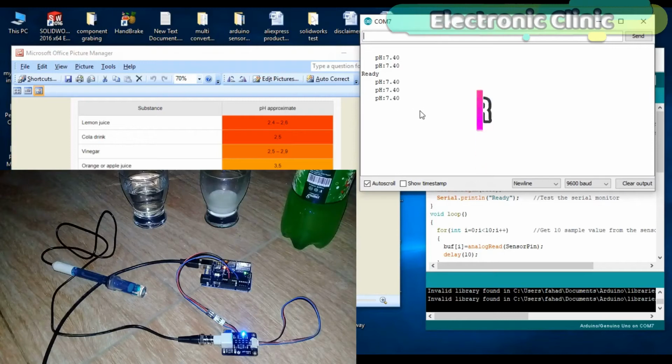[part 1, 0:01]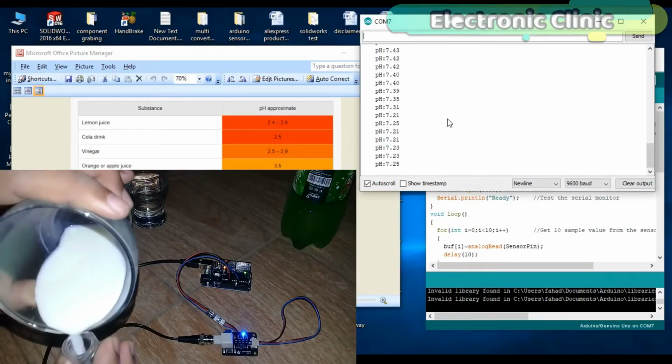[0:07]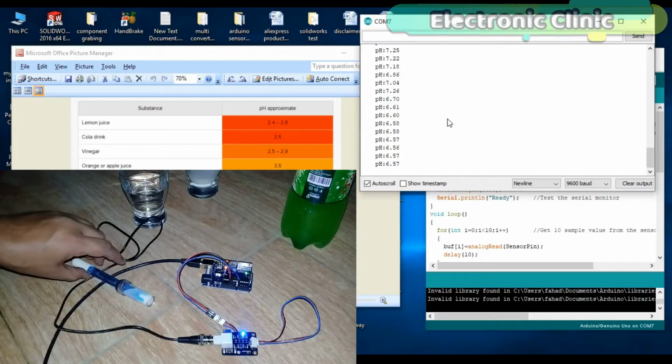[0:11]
In today's episode, you will learn how to use the pH sensor with Arduino and find the pH value of different liquids and display the pH value on the serial monitor.
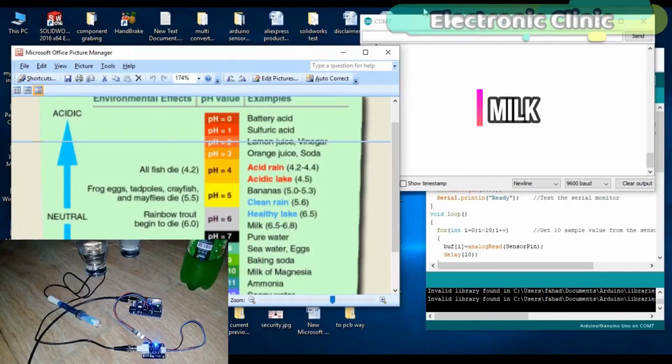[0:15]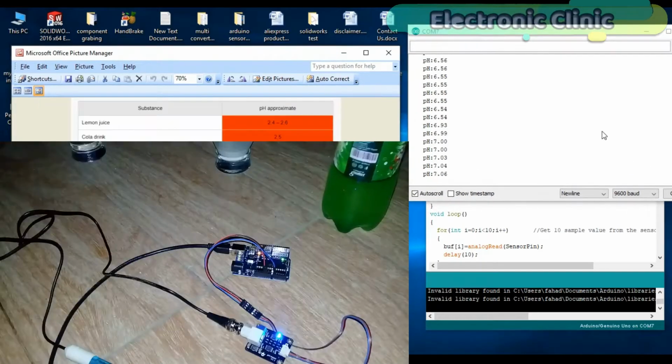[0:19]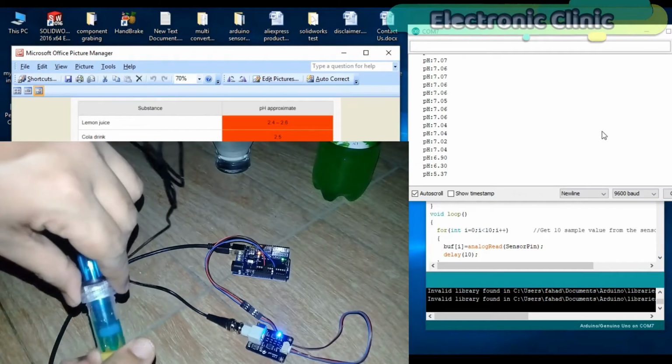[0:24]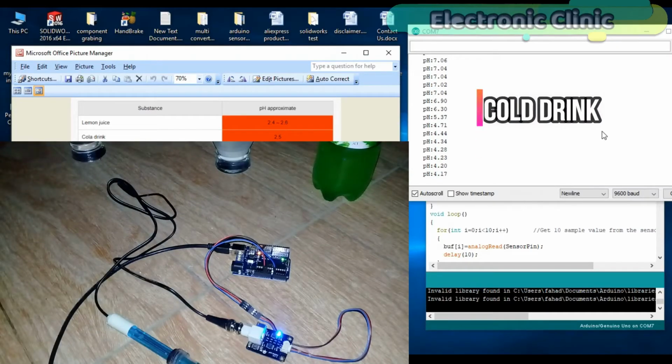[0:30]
As this is a getting started tutorial, we will only cover the extreme basics, for example: number 1, how a pH sensor works. Number 2, application of pH meter. Number 3, pH sensor calibration. Number 4, pH sensor interfacing with Arduino. Number 5, basic programming to find the pH value of different liquids. And finally, number 6, testing. Let's get started.
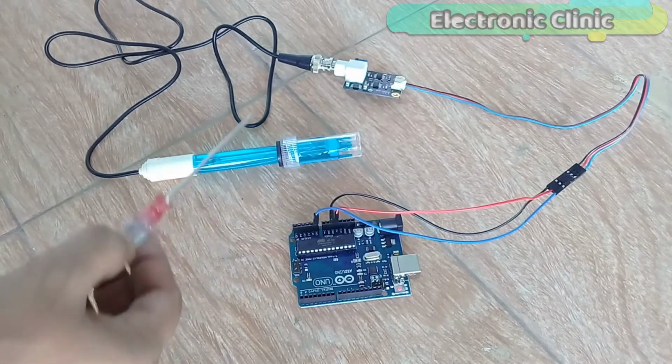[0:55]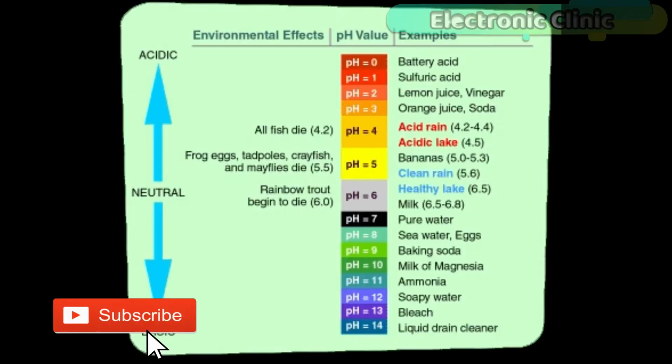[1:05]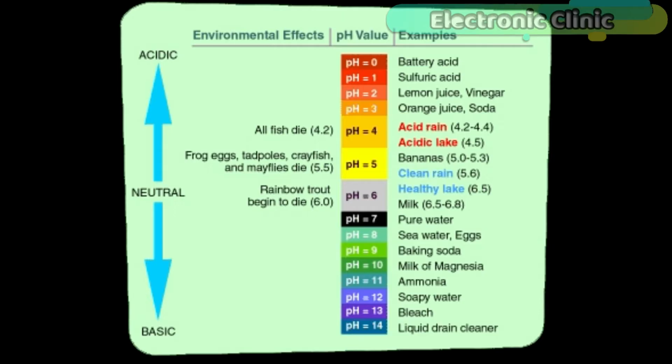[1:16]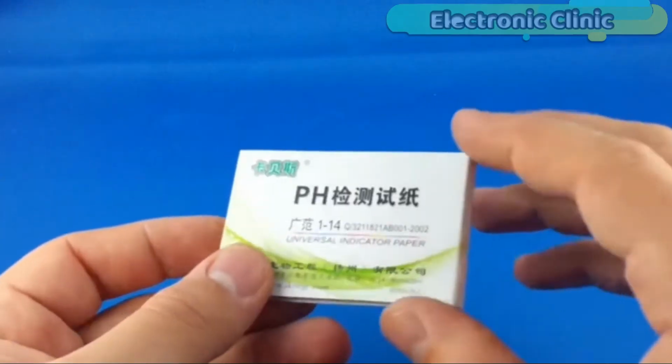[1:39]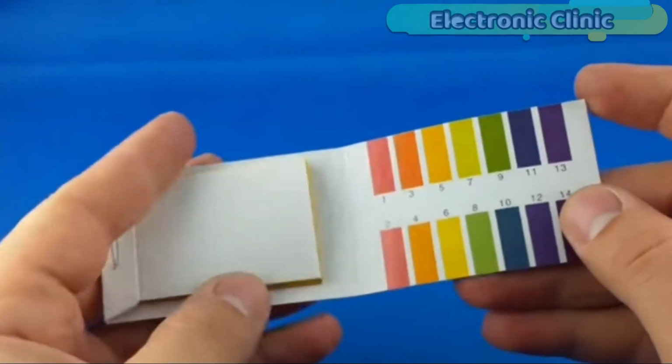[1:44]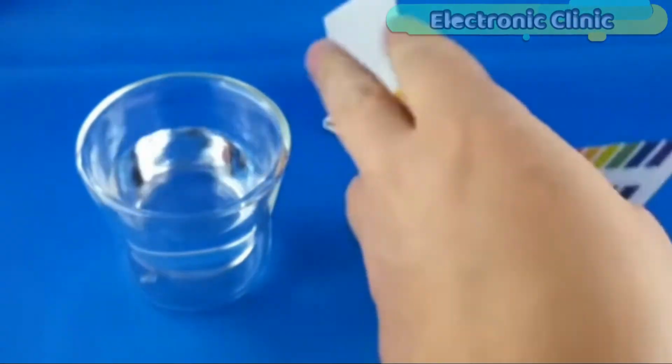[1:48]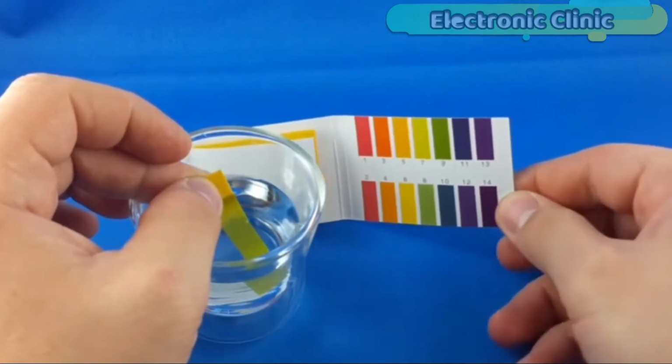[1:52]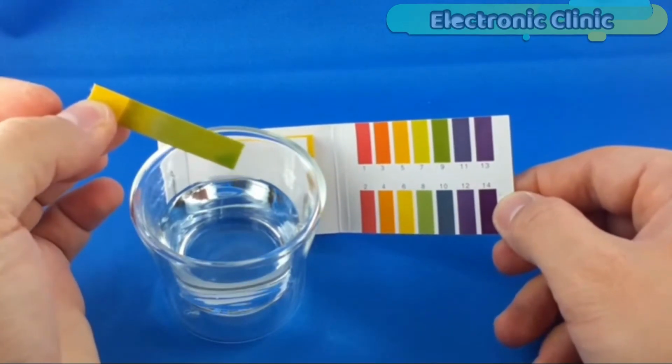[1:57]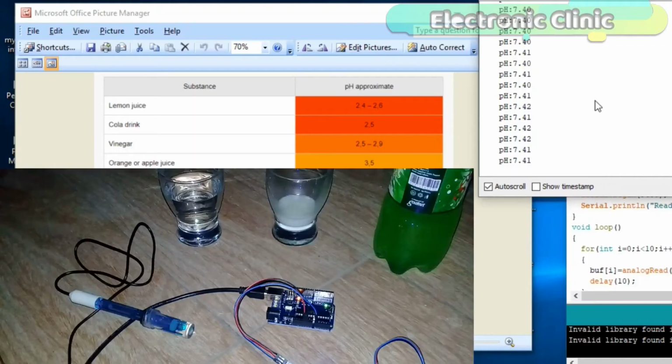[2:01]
If you are using litmus paper, none of this matters. The basic idea is that the paper turns a slightly different color in solutions between pH 1 and 14. And by comparing your paper to a color chart, you can simply read off the acidity or alkalinity without worrying how many hydrogen ions are there. But a pH meter somehow has to measure the concentration of hydrogen ions. How does it do it?
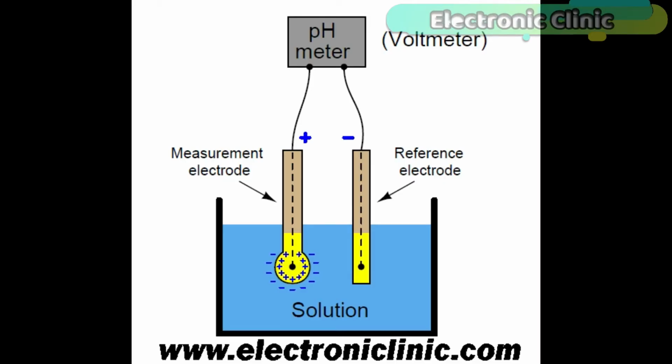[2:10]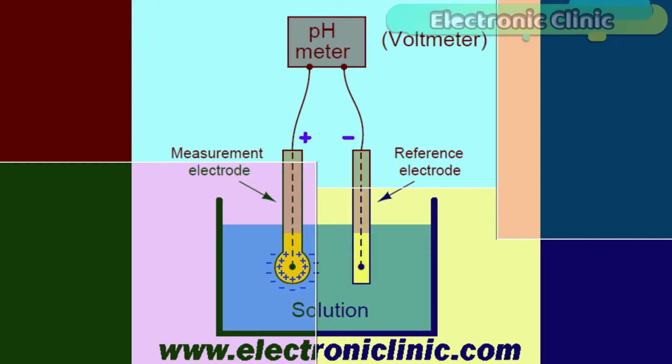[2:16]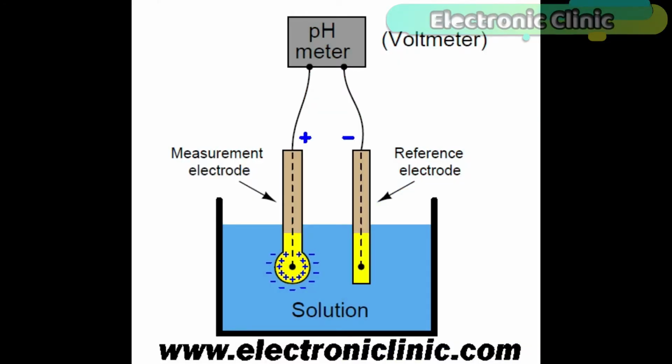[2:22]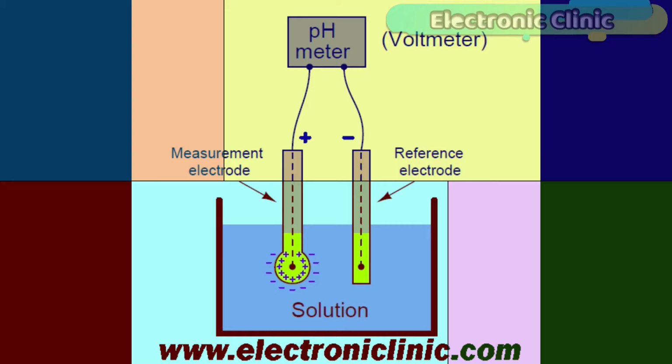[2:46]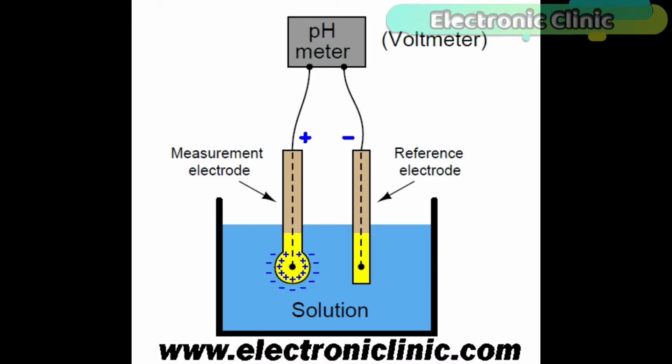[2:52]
An acidic solution has far more positively charged hydrogen ions in it than an alkaline one. So it has greater potential to produce an electric current in a certain situation. In other words, it's a bit like a battery that can produce a greater voltage. A pH meter takes advantage of this and works like a voltmeter. It measures the voltage, the electrical potential, produced by the solution whose acidity we are interested in, compares it with the voltage of a known solution, and uses the difference in voltage, the potential difference between them, to deduce the difference in pH.
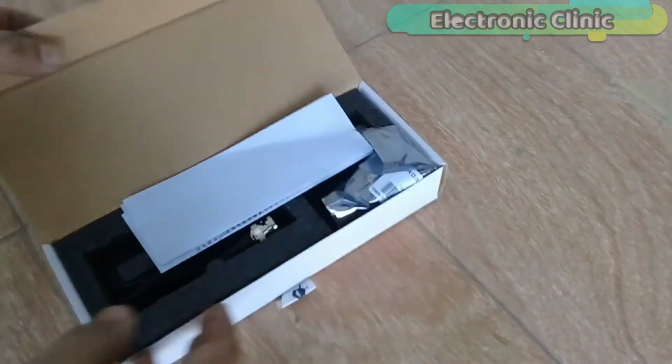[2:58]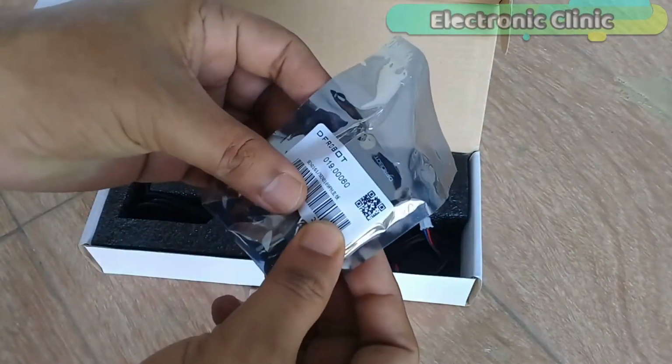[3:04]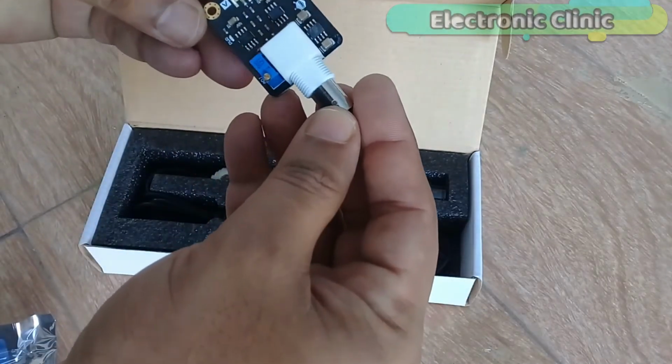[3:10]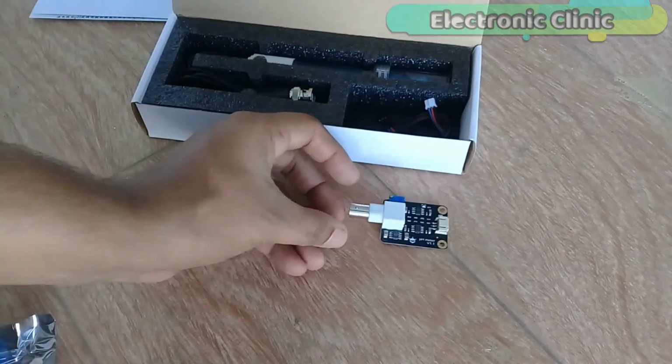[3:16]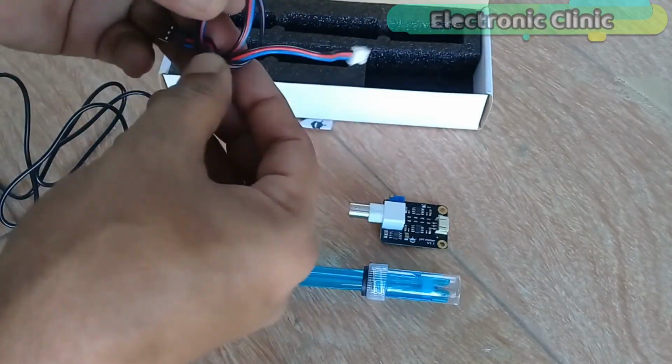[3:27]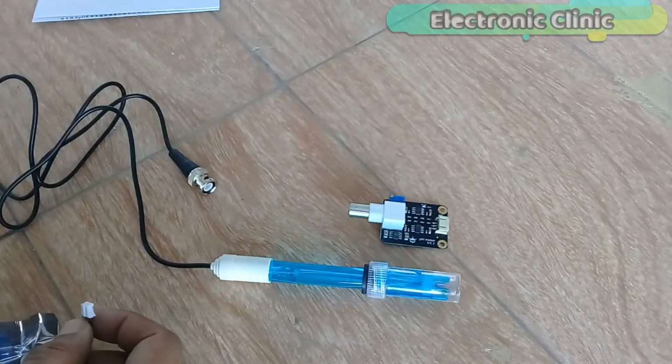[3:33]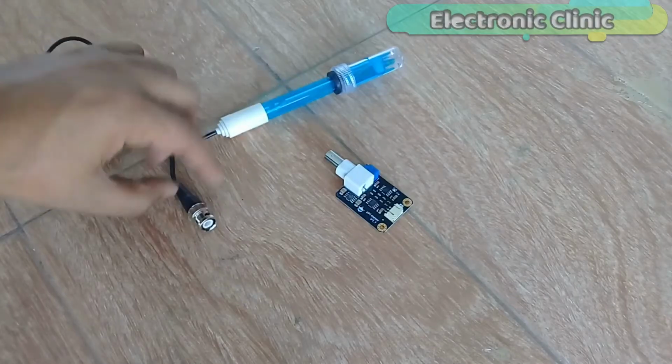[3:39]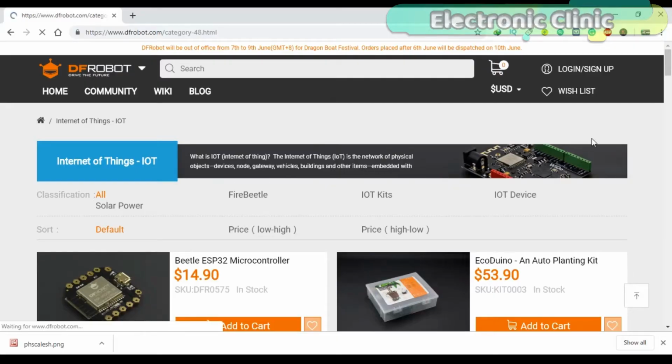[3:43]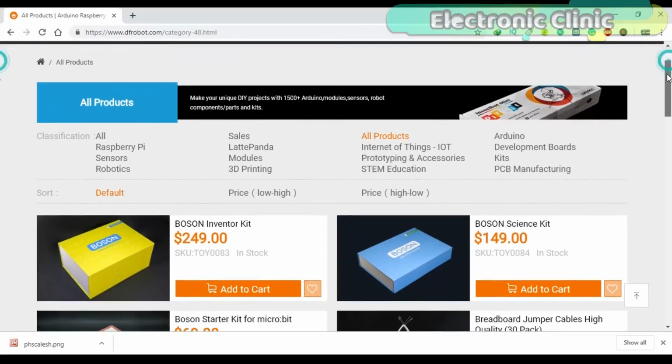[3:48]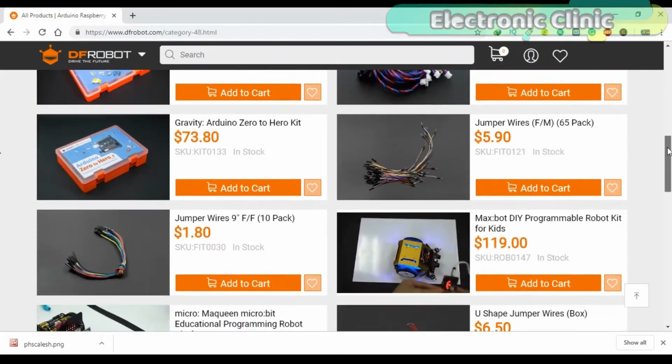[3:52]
This is the analog pH sensor kit from DFRobot. DFRobot is a leading robotics and open source hardware provider. They create innovative, user-friendly hardware and software products that become the building blocks in all kinds of electronic projects.
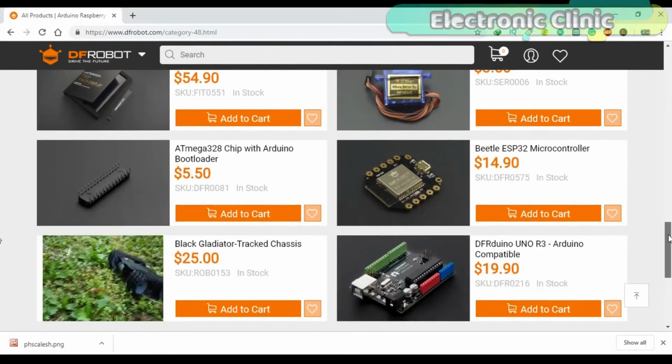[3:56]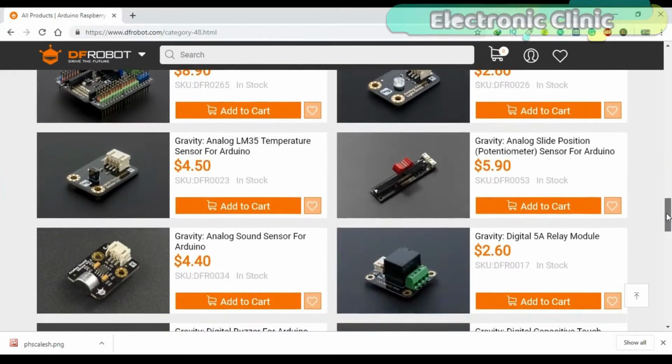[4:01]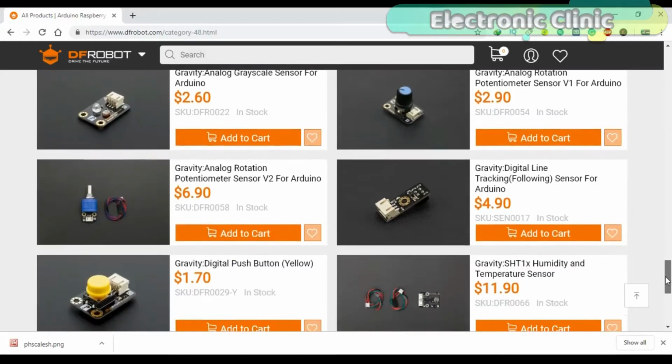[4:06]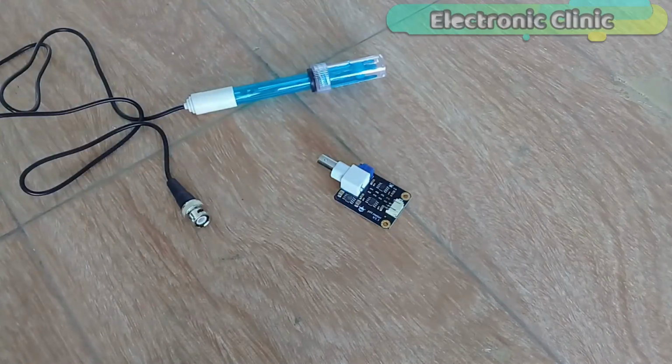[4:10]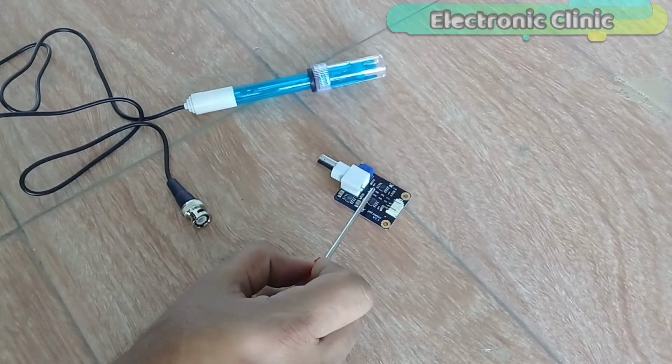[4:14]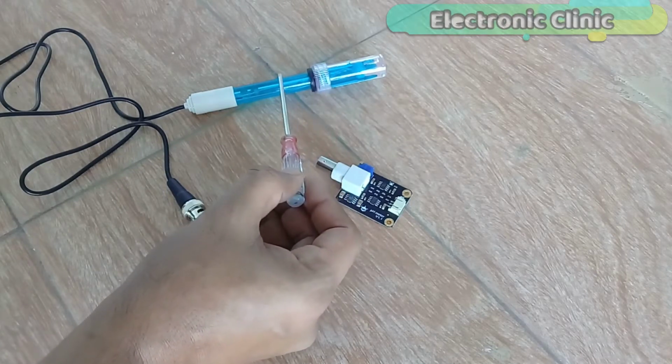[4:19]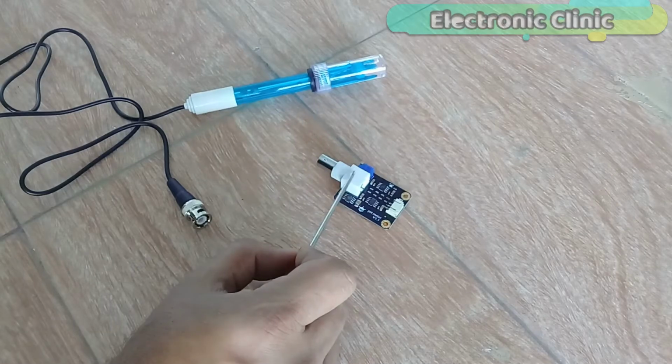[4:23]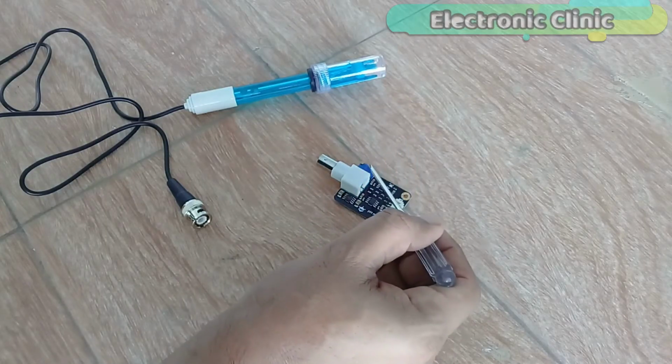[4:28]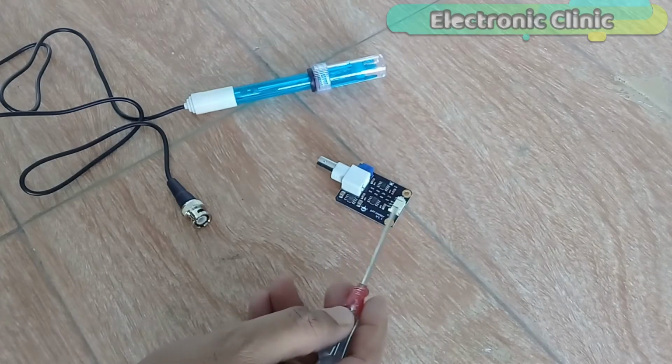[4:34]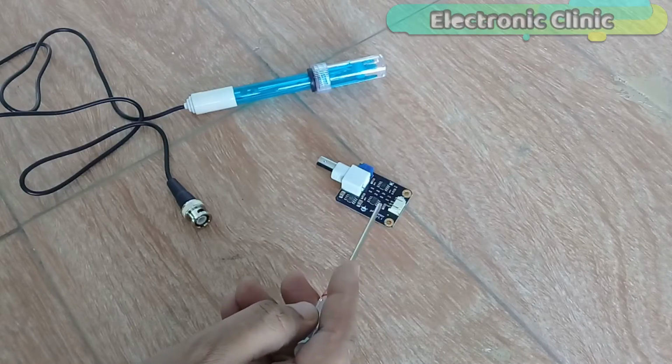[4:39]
This pH sensor kit is best for measuring water quality and other parameters. It has an LED which works as the power indicator, a pH sensor, a BNC connector, a variable resistor which is used for the calibration, which I will explain during the testing, and a pH 2.0 sensor interface circuit. Its interfacing with the Arduino is really simple.
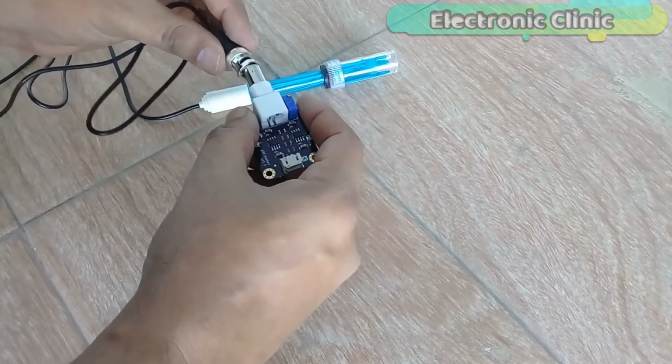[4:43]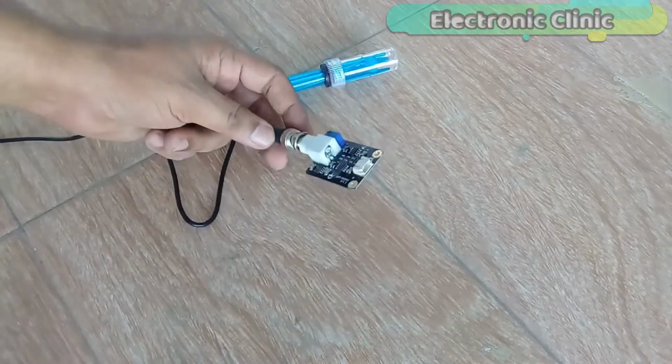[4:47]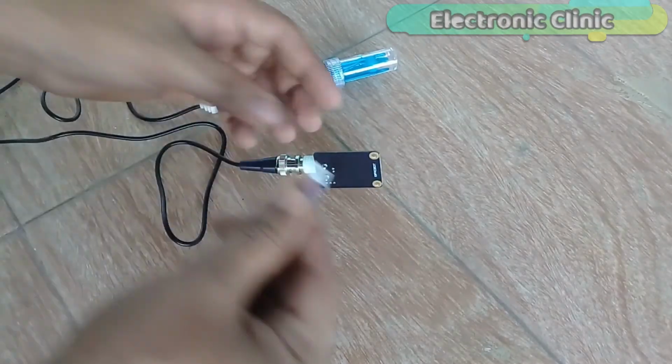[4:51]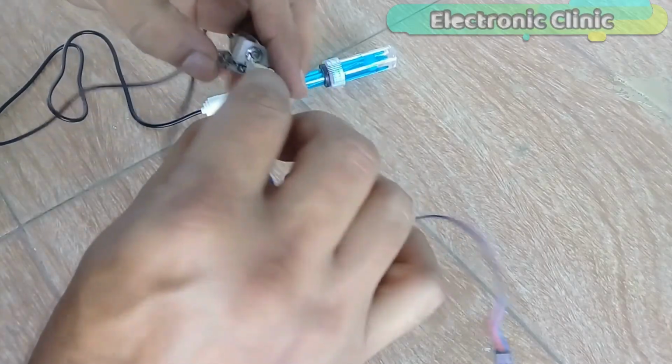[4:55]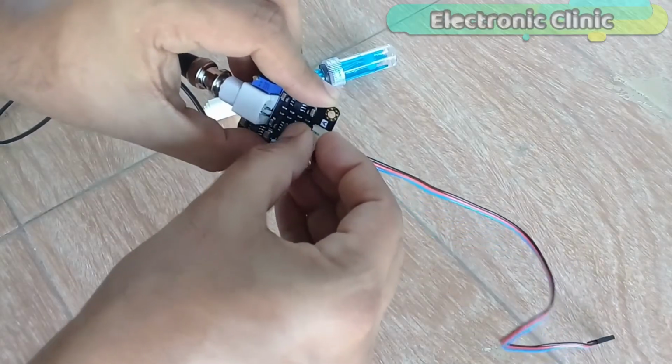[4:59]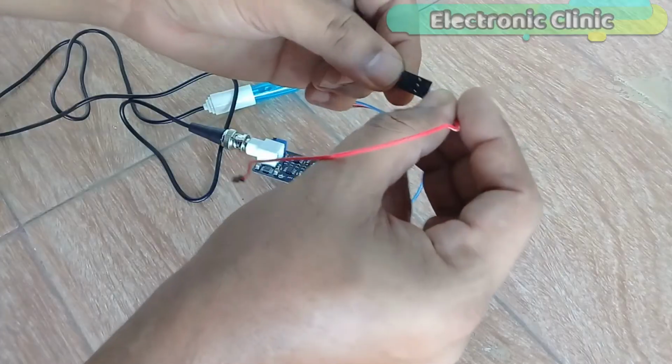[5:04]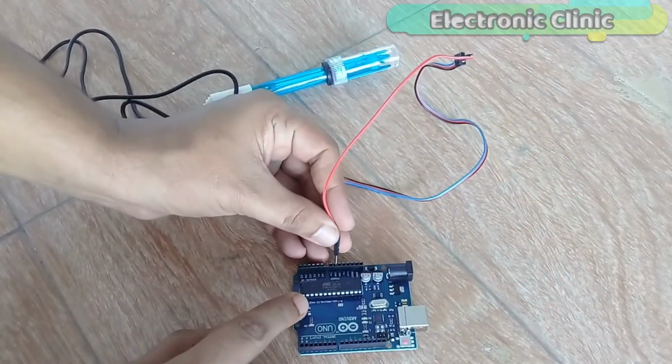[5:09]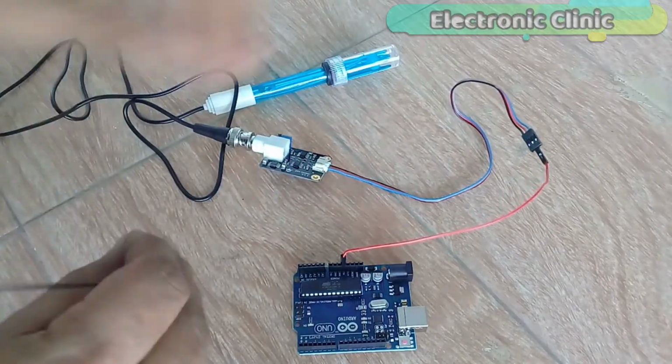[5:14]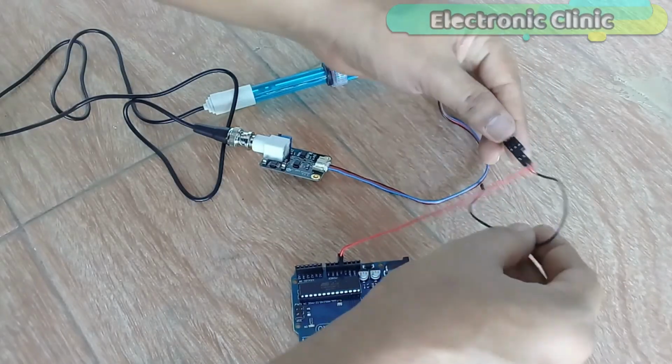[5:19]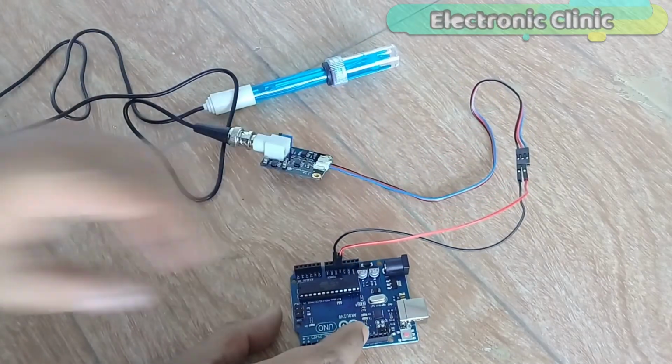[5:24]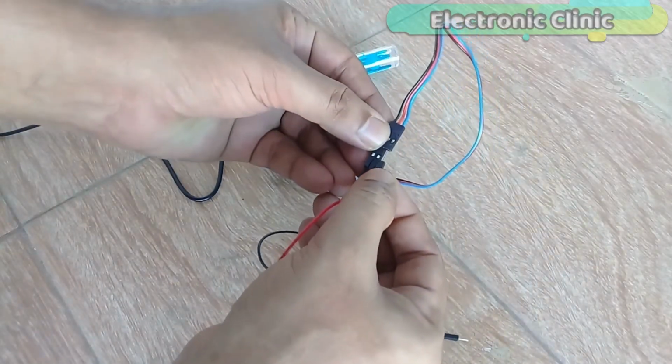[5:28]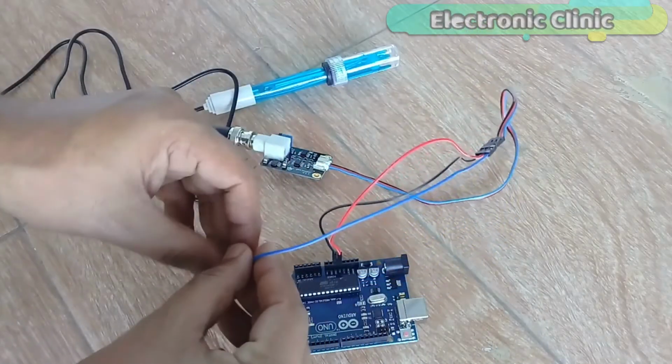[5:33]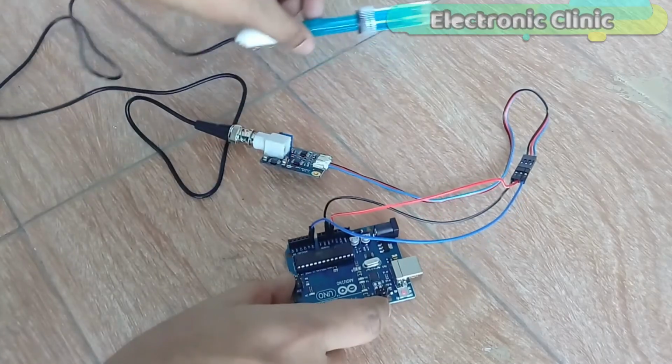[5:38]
Connect the red wire with the Arduino's 5V. Connect the black wire with the Arduino's ground. Connect the blue wire with the Arduino's analog pin A0. So that's all about the interfacing.
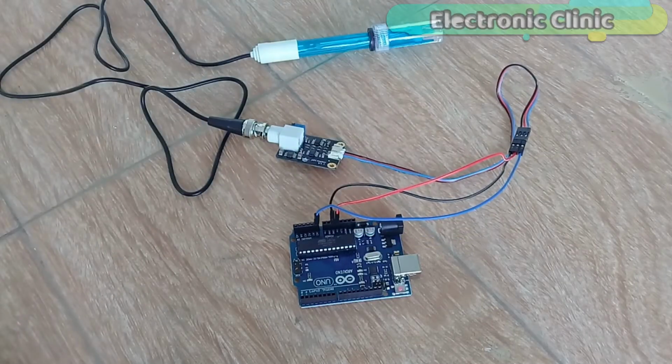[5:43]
Now let's have a look at the Arduino programming. This is a very simple and basic program to find the pH value of different liquids. I will be using some known liquids whose pH values are already known. For demonstration purposes, I will be using water, milk and a cold drink. This program can be downloaded from my website and also from DFRobot.com. I will provide links in the description.
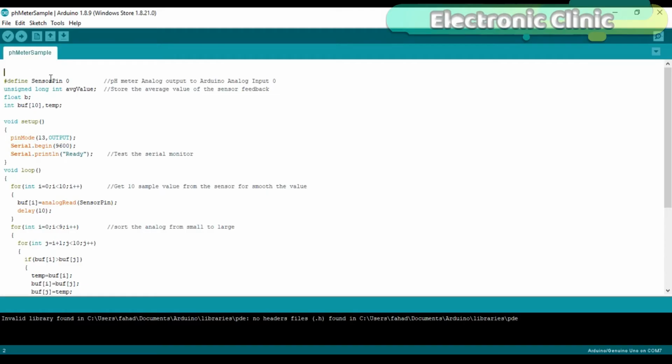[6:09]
This defines sensor pin 0. The pH meter analog output is connected with the Arduino's analog input A0. Unsigned long integer average value stores the average value of the sensor. Serial.begin(9600) activates the serial communication using the Serial.begin function. 9600 is the baud rate. Then starts the void loop function.
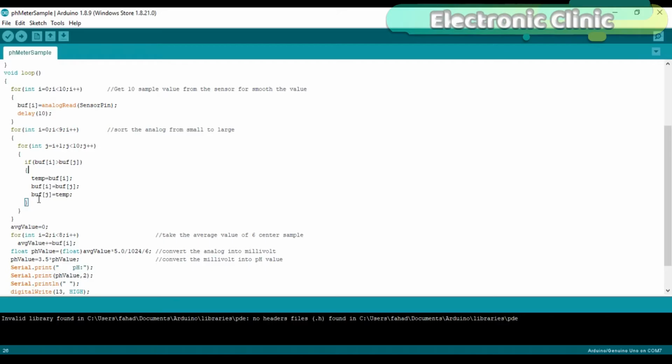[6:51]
We use a for loop to get 10 sample values from the pH sensor and store these values in an array. Then we use these two for loops to sort the values from smaller to larger in ascending order. This for loop is used to take the average value of the 6 center samples and the value is stored in average value. Then we convert this value into millivolts and into the pH value. Then finally, we display the pH value on the serial monitor. I have already uploaded this program. Let's watch this project in action.
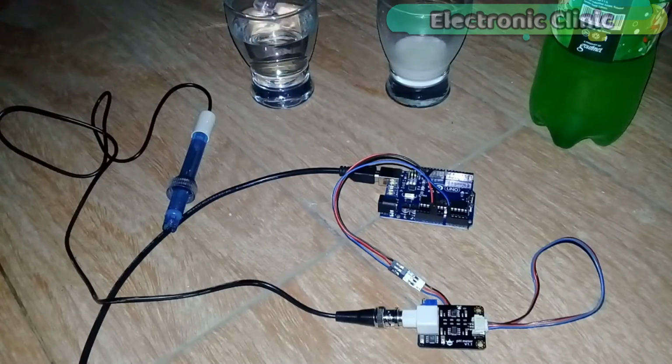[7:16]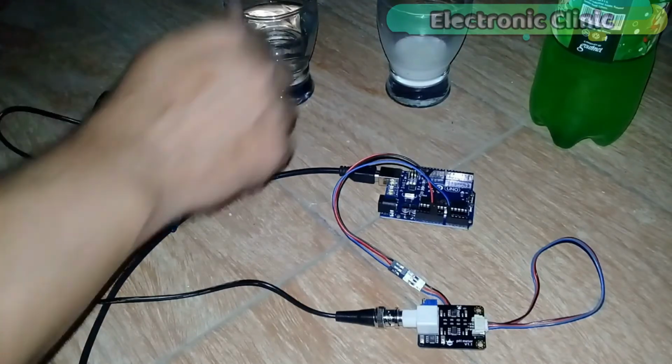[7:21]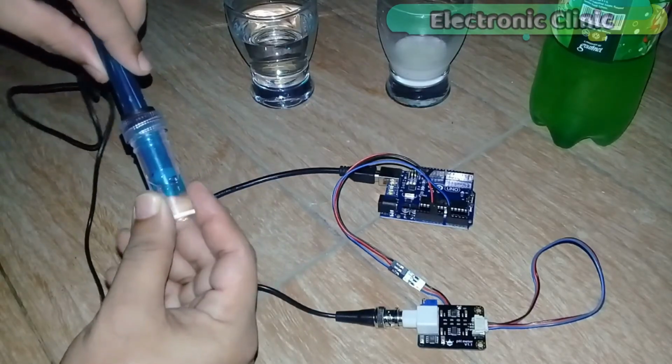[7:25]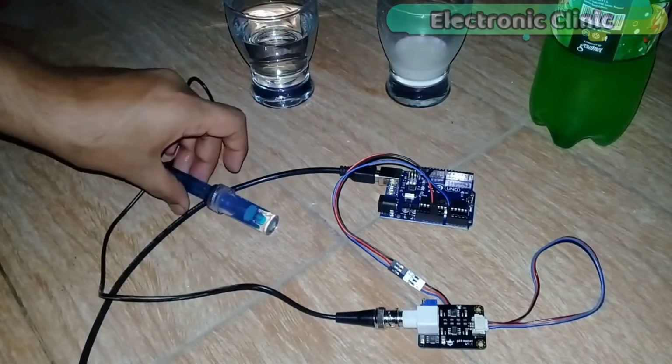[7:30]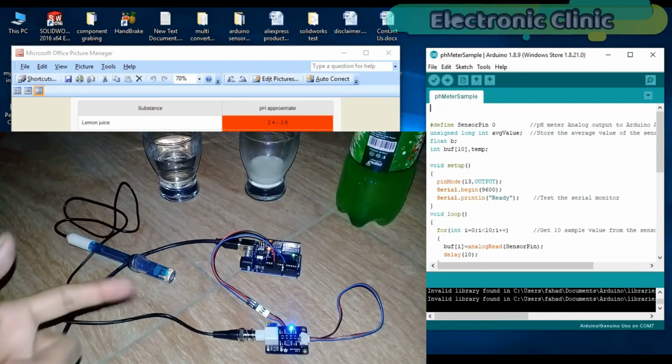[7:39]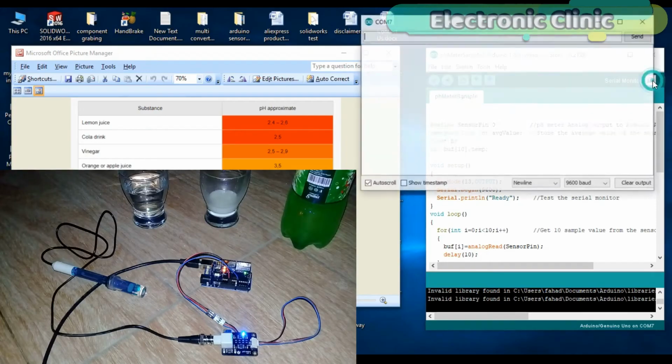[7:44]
First of all, let's find the pH value of the water. The water under test is not pure water, so in this case, the pH value can be slightly greater than 7. Now connect Arduino with the laptop and open the serial monitor. The pH of pure water is 7.
In general, water with a pH lower than 7 is considered acidic, and with a pH greater than 7 is considered basic. The normal range of pH in surface water systems is 6.5 to 8.5, and the pH range for groundwater systems is between 6 to 8.5. So the water under test is safe and can be used for drinking without any problem. Now let's test the pH value of the milk.
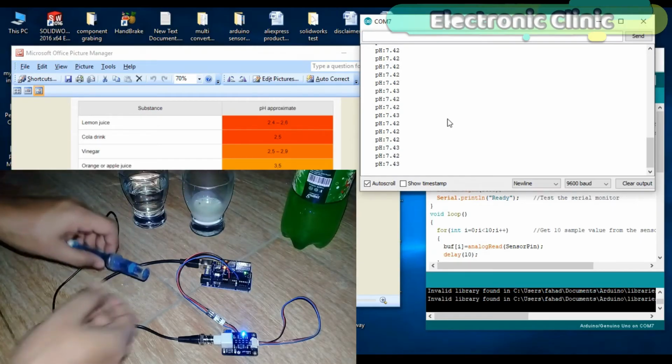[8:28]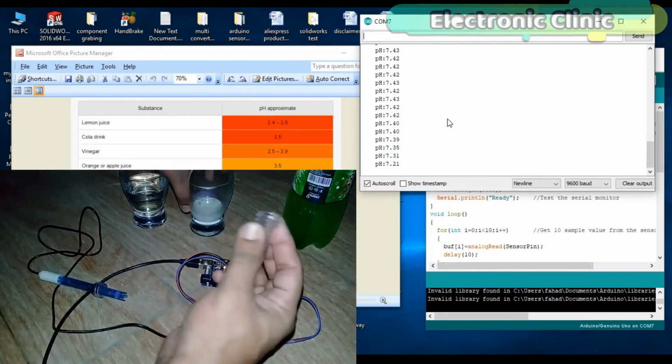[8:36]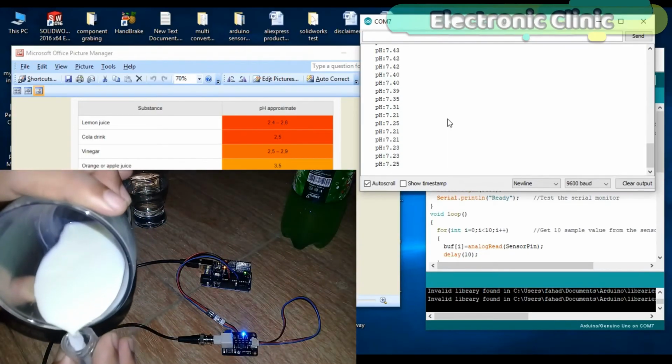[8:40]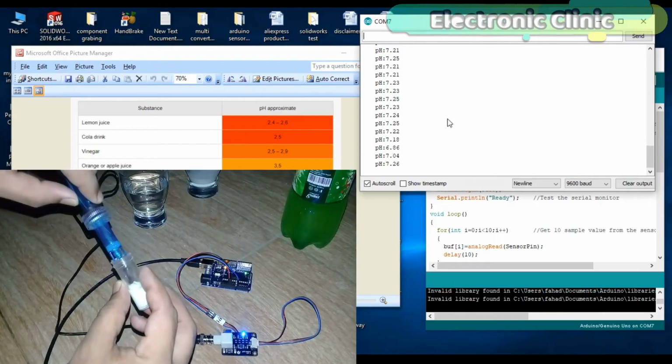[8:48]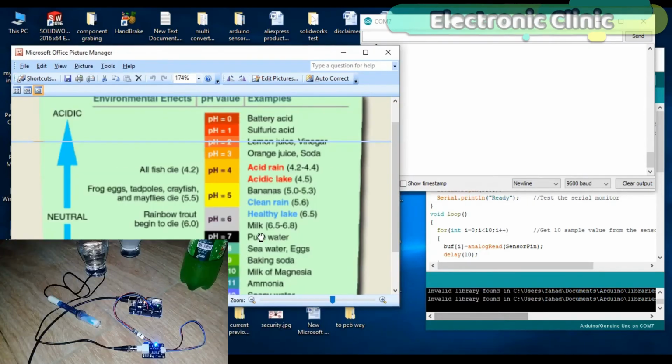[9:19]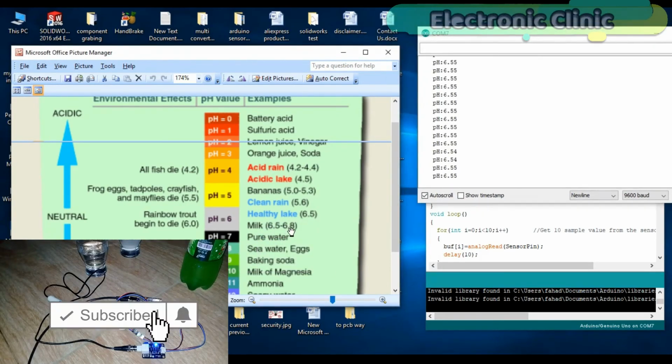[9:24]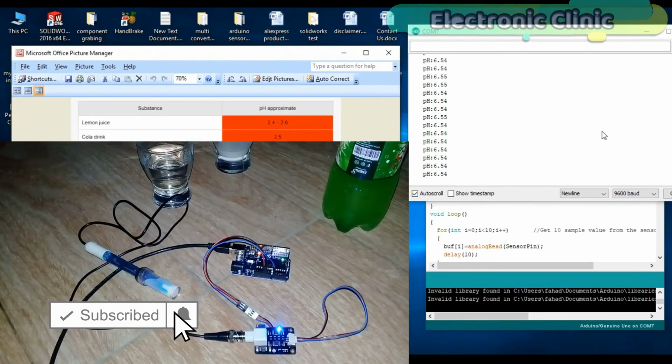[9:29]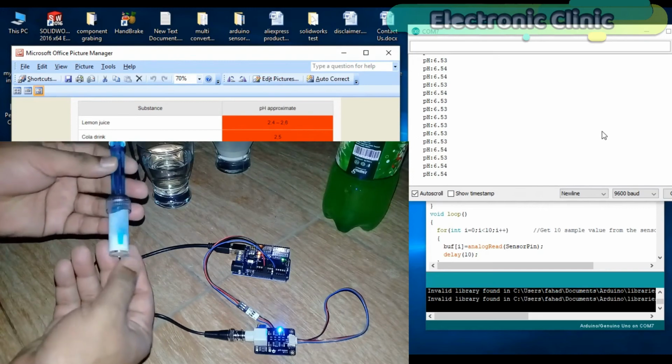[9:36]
Fresh cow's milk has a pH of between 6.7 and 6.5. Values higher than 6.7 denote mastitic milk, and values below pH 6.5 denote the presence of bacterial deterioration. Now let's check the pH value of the cold drink. Remove the milk and clean this with water.
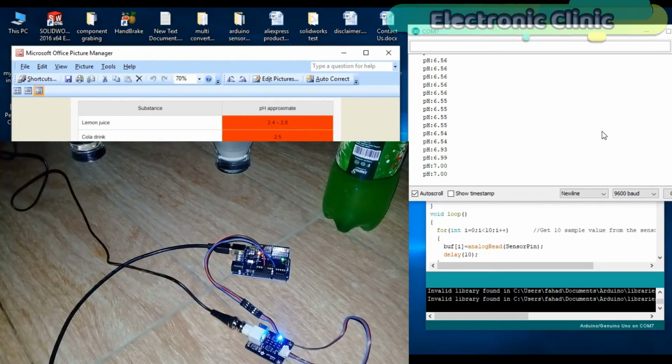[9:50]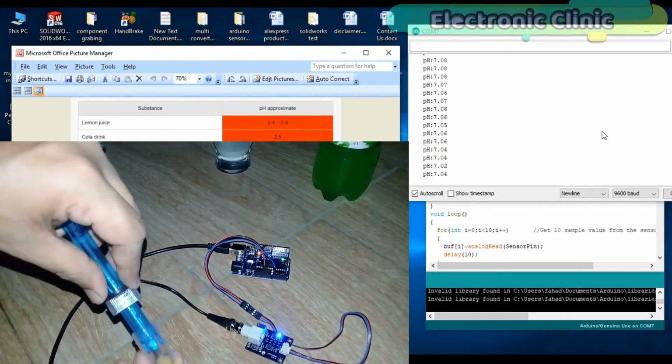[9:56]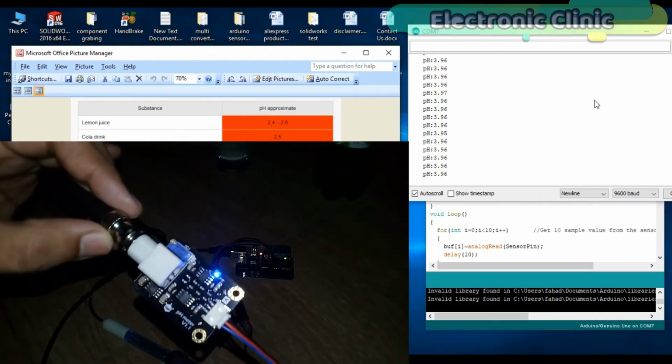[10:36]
The calibration is really easy. All you need is to select a liquid with a known pH value, for example the cow's milk, and check its value. If the value is greater or lower than the exact pH value, which you can of course find in the chart, then all you need is to rotate this variable resistor and adjust the value.
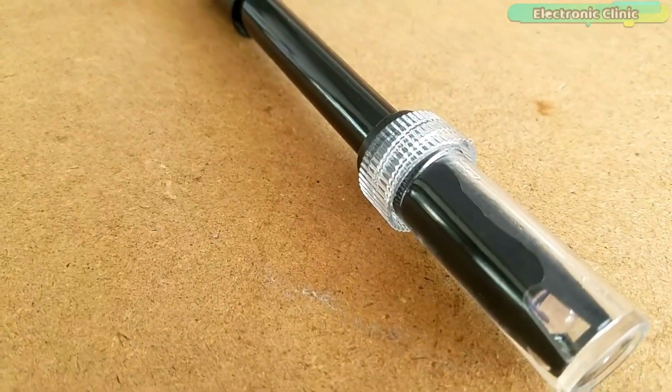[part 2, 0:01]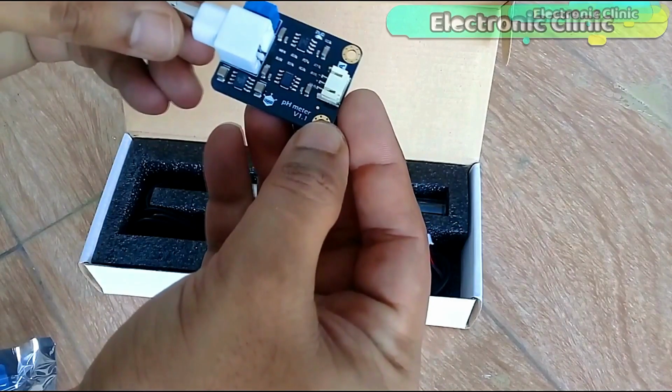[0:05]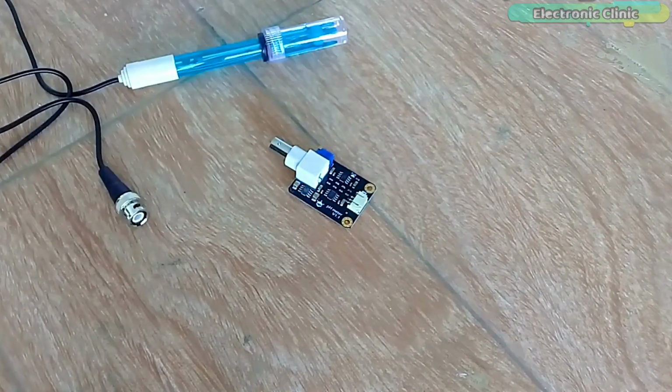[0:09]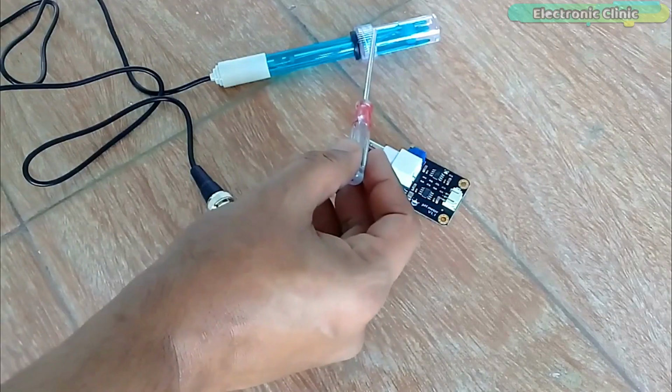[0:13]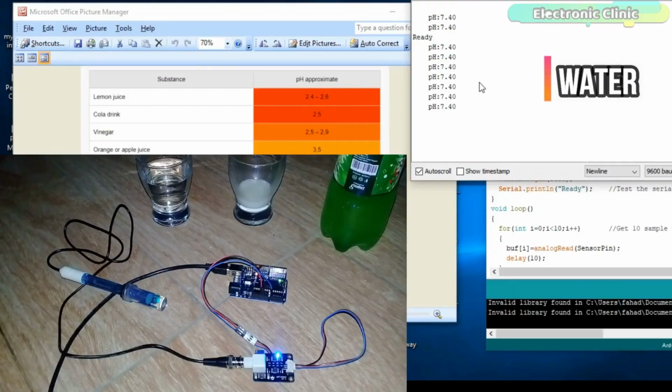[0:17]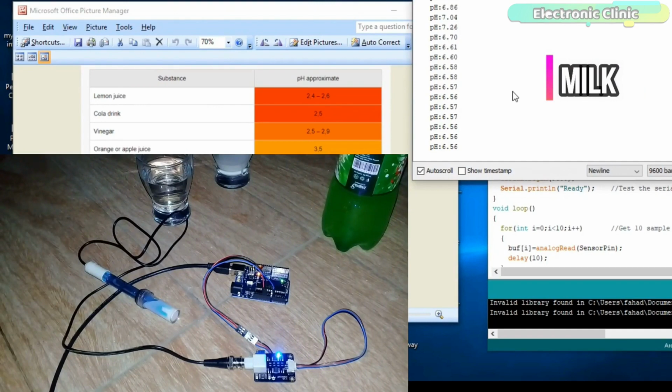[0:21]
This is the analog pH sensor kit from DIYMORE, which is a bit different from the one developed by DFRobot, which I have already used in some of my previous videos explaining what a pH sensor is, its working, calibration and how to use a pH sensor to find the pH value of different liquids.
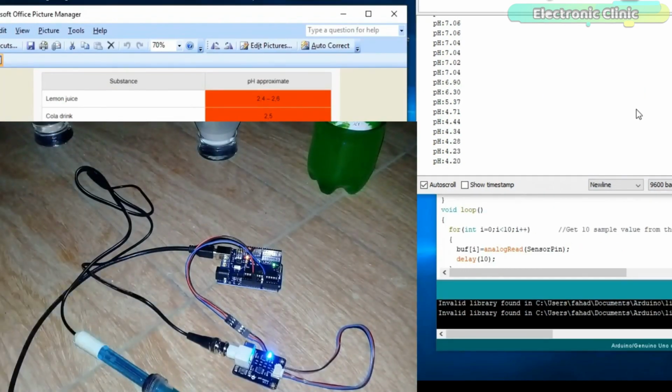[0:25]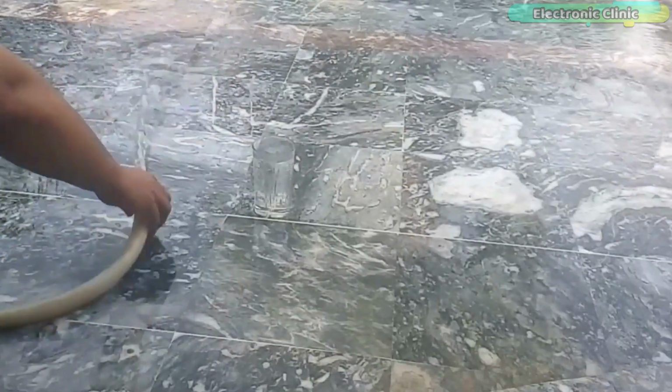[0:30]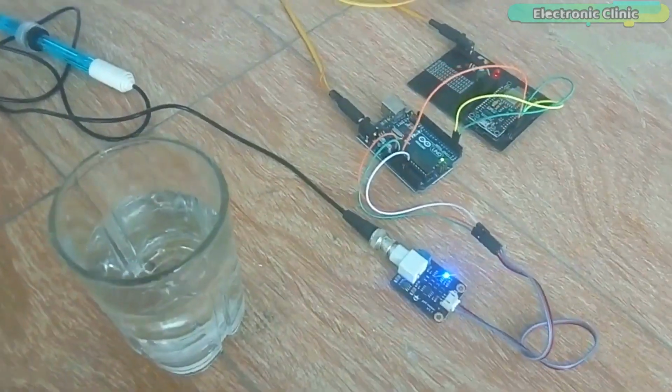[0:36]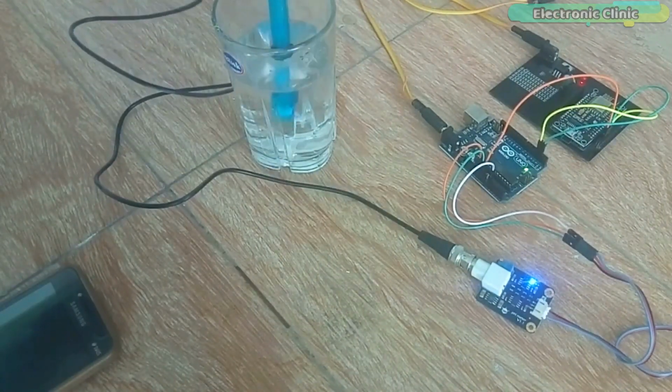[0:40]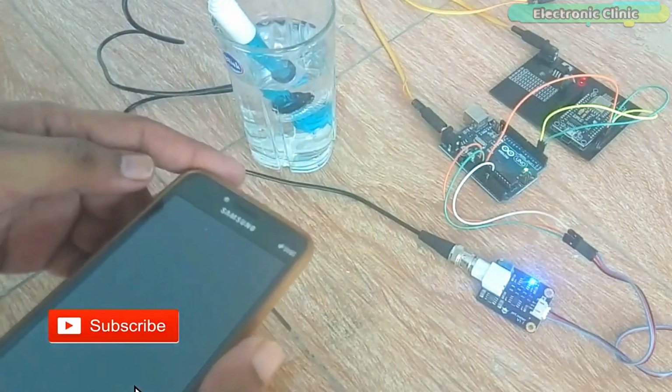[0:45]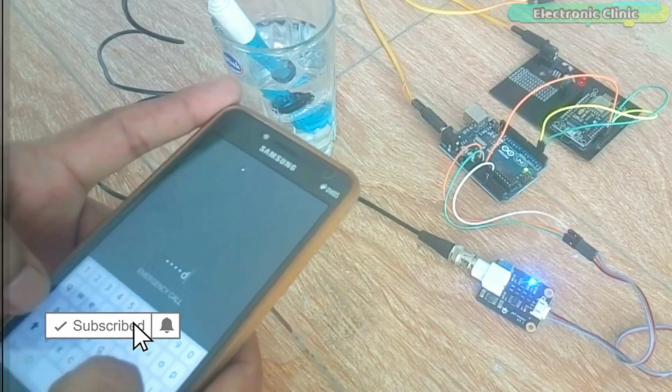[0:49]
I also used the DFRobot pH sensor kit for measuring water quality using the Arduino board, and in an IoT based water quality monitoring system using the NodeMCU ESP8266 WiFi module. So if you want to learn how to use the pH sensor kit from DFRobot, then I highly recommend watching my previous videos. I will provide links in the description.
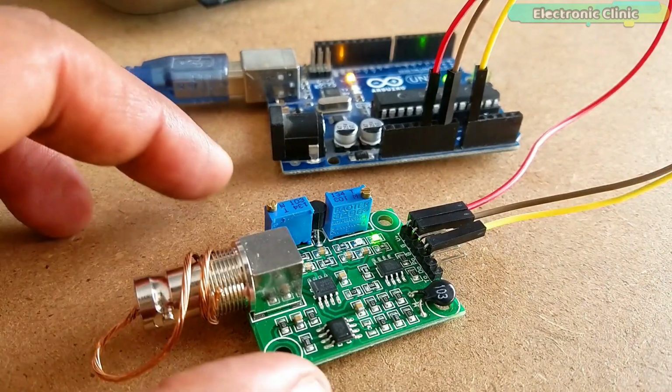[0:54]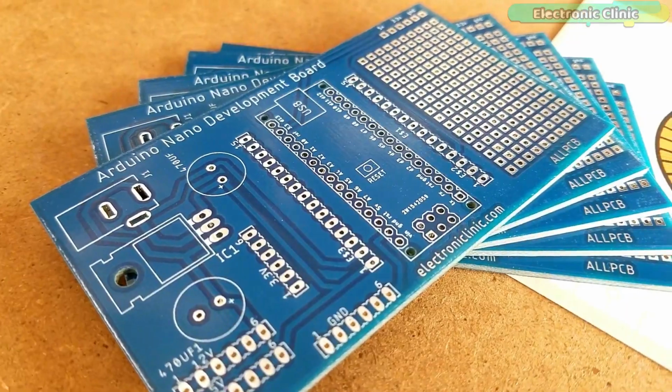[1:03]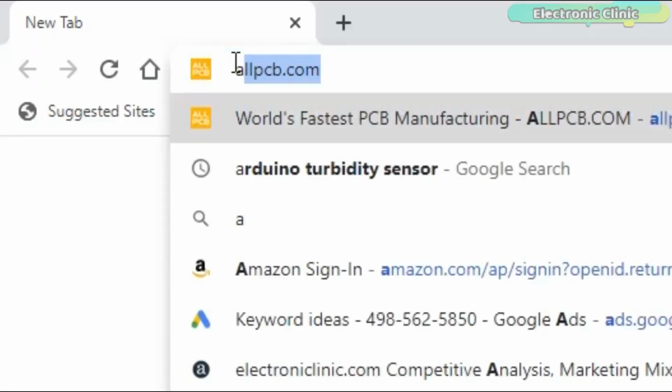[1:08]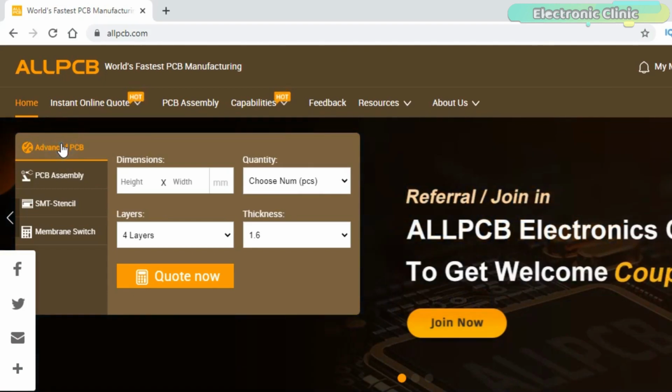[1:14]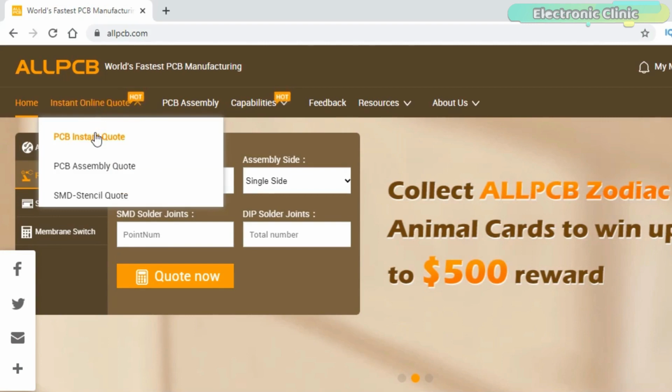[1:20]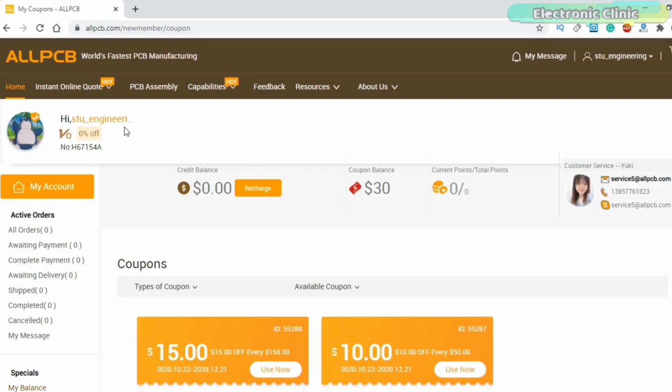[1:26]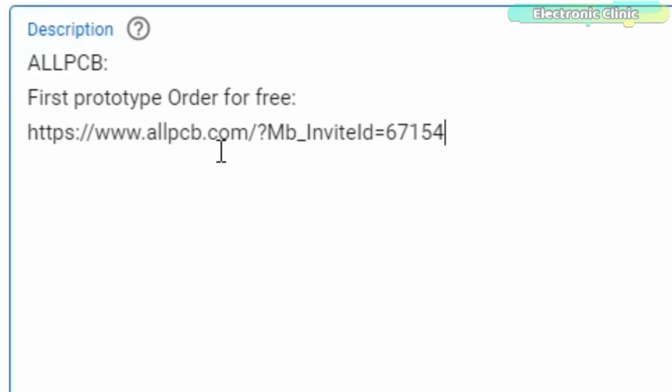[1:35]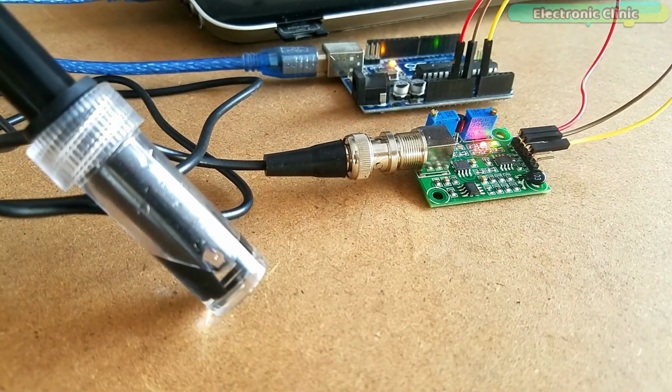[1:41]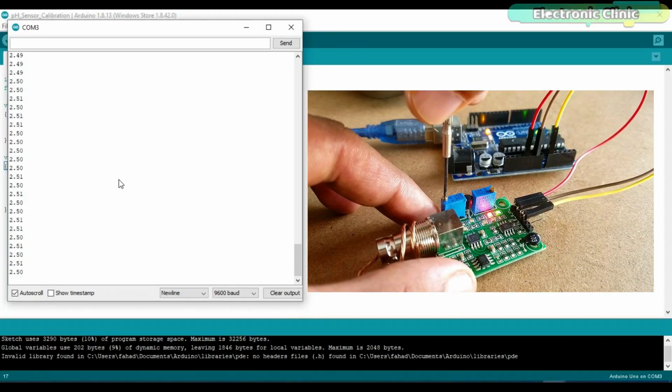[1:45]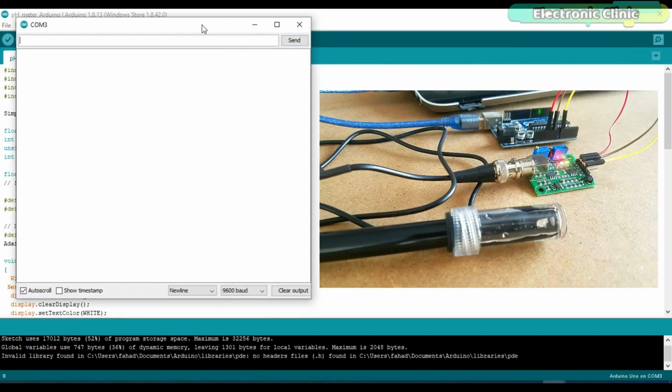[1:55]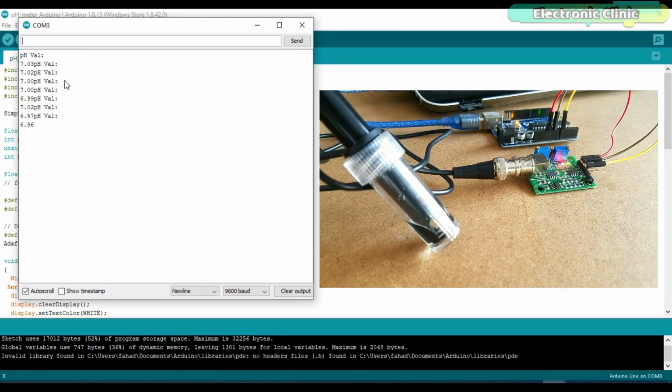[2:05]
In today's episode, you will learn how to calibrate and use this low-cost pH sensor kit from DIYMORE. I started off by calibrating the pH sensor using the Arduino board. Once the pH sensor was perfectly calibrated, I started by measuring the pH value of distilled water and displayed the values on the serial monitor. I performed a series of tests using different liquids, and once satisfied, I further modified the code to display the pH value on the OLED display module.
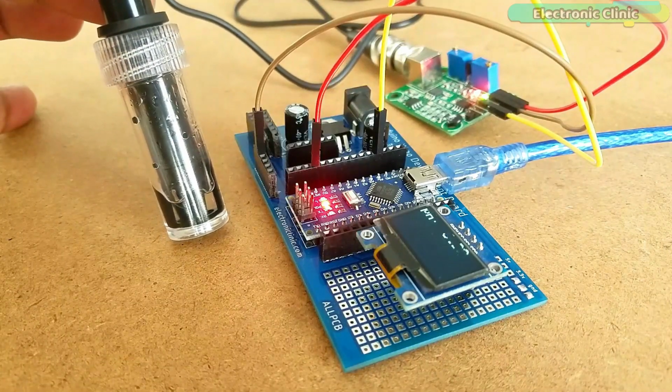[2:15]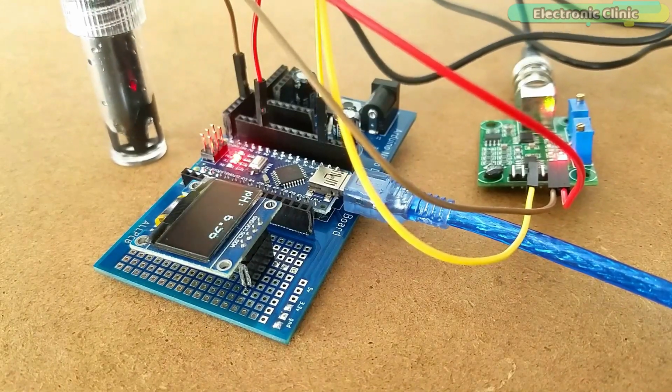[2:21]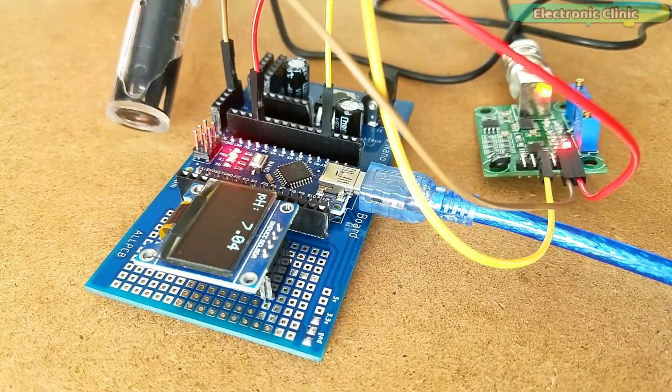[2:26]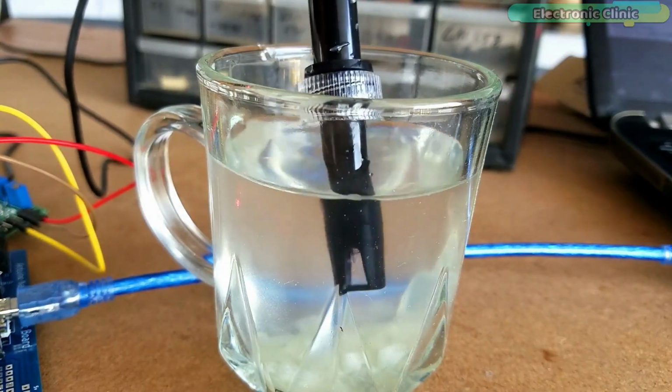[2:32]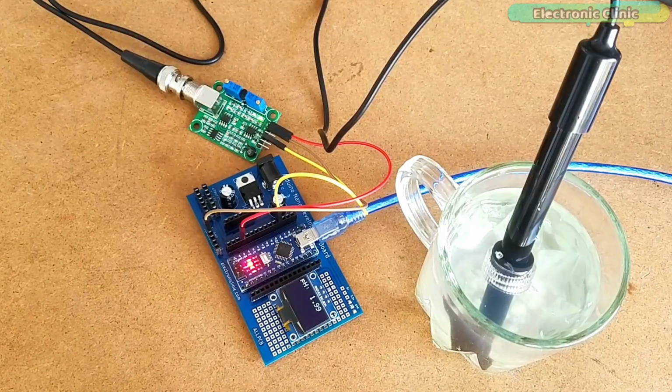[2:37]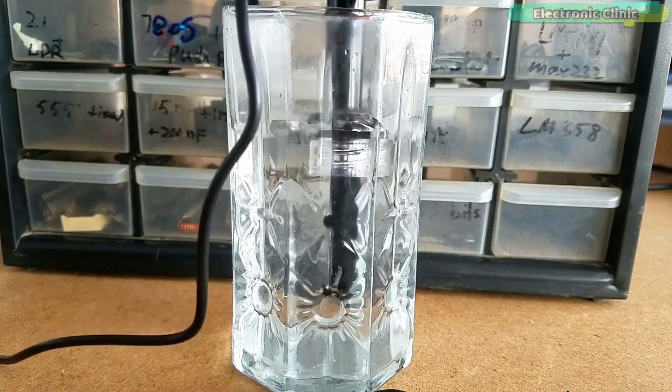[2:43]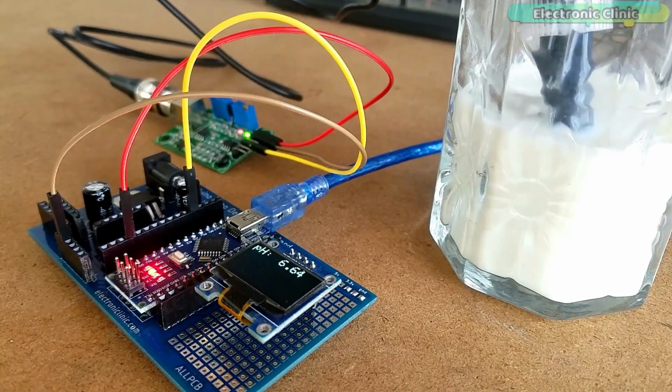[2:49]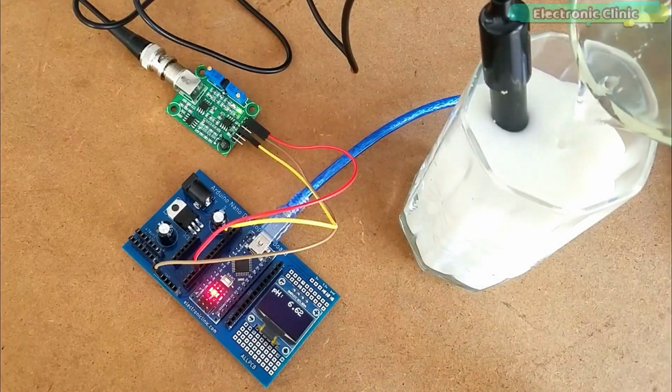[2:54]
Again, I started with the distilled water and waited for around 30 minutes to check if there would be any fluctuations in the pH value. The pH value remained almost the same. Next, I added some lemon juice to the water and I was amazed with the result. As you know, the pH value of lemon juice is 2, and the value on the display, as you can see, is almost 2. Next, I cleaned the pH sensor probe to measure the pH of milk. For the milk too, I got the correct pH value. I also added lemon juice to check if the value would drop.
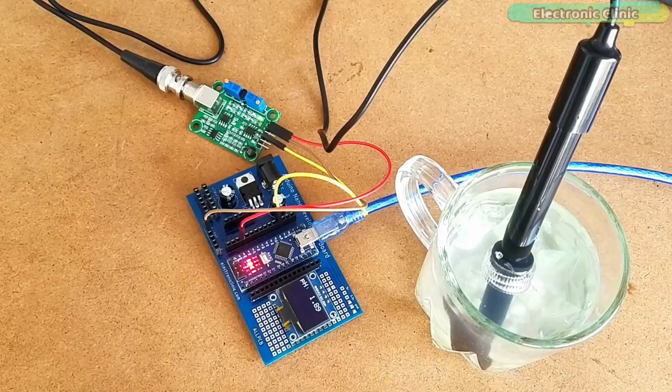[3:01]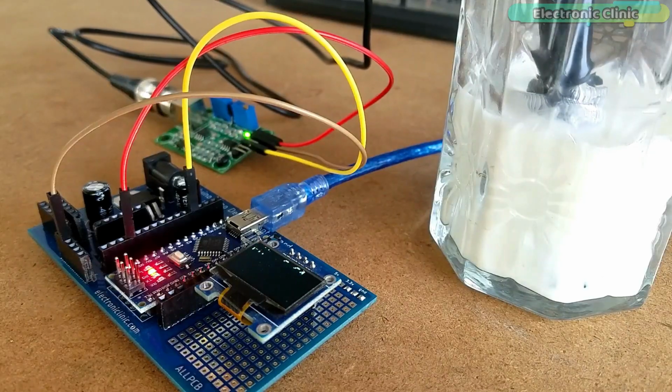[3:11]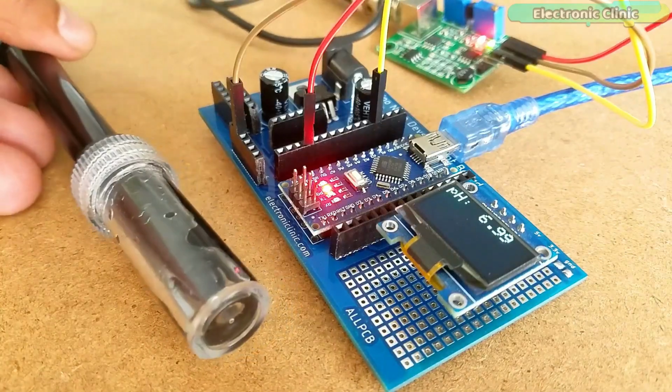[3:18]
As this is a getting started tutorial, I will try to explain the maximum basic things. In this tutorial, we will cover: number 1, DIYMORE pH sensor kit pinout and technical specifications. Number 2, pH sensor calibration. Number 3, complete circuit diagram explanation. Number 4, pH sensor Arduino programming. And finally, number 5, testing. Without any further delay, let's get started.
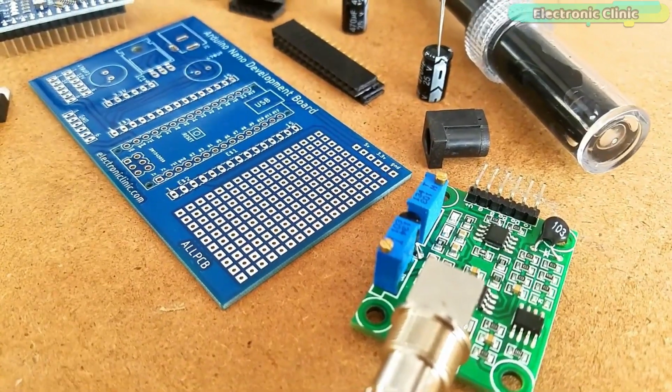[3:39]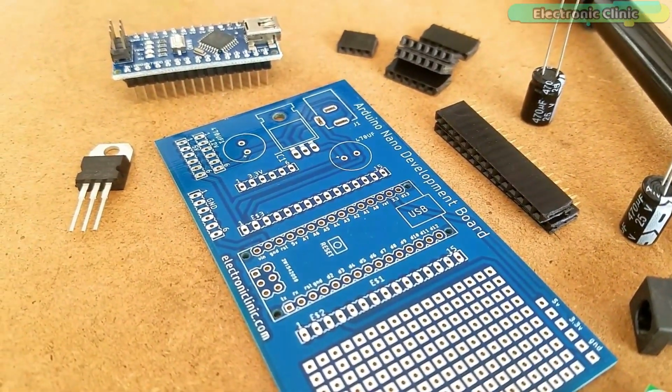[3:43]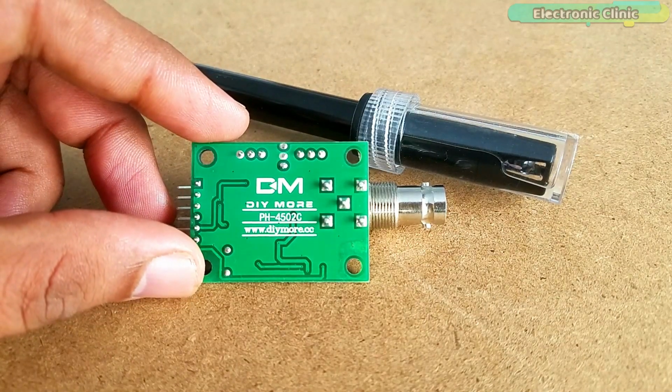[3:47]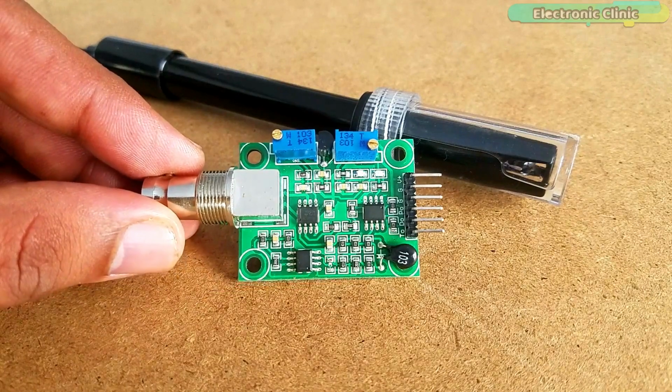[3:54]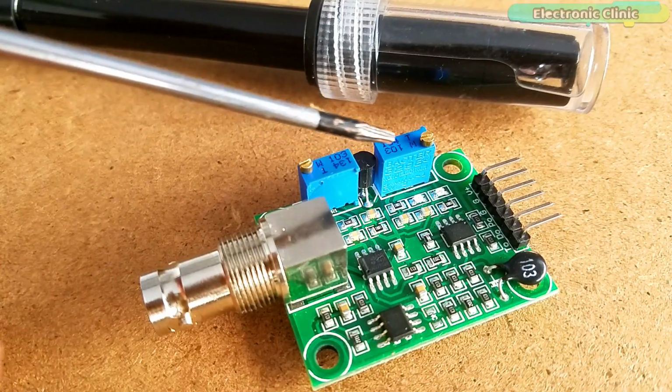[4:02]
This is the analog pH sensor kit from DIYMORE, which is a bit different from the one developed by DFRobot. This pH sensor kit can measure pH values of different liquids with good precision. The board contains a pair of trimmers through which you can adjust the analog reading offset, which I will explain while calibrating the pH sensor. I will show you the easiest way to calibrate this pH sensor without using any liquid or substance, and then later we'll measure the pH value of some known liquids.
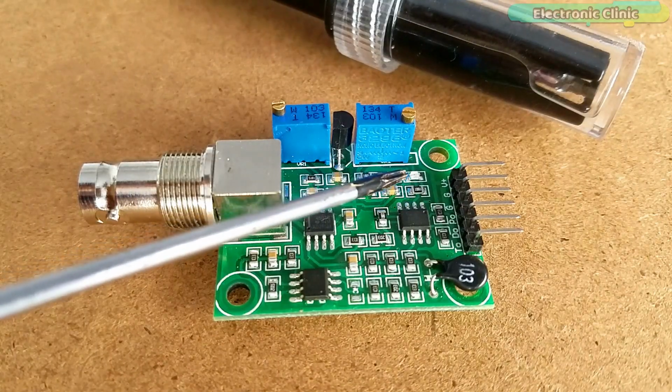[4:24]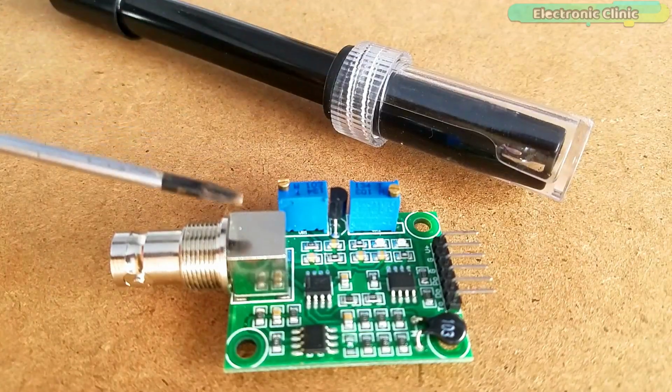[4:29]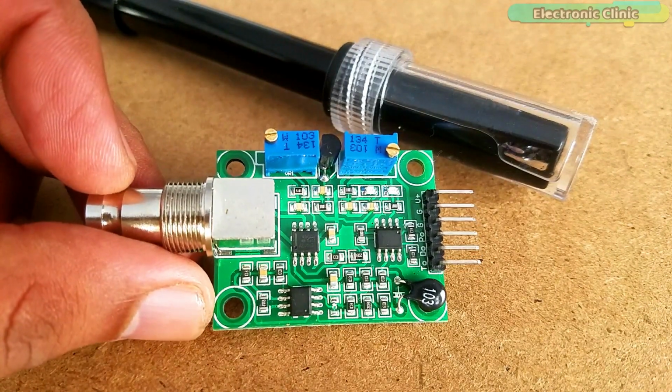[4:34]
It has two LEDs which work as the power indicator, a pH sensor, and a BNC connector. This board is also known as the sensor interface circuit. This pH sensor kit has an onboard voltage regulator chip, due to which it can be easily powered using 3.3 to 5.5 volts DC. Due to this wide range of input voltages, it can be used with 5 volt and 3.3 volt compatible controller boards like Arduino, ESP32 and ESP8266.
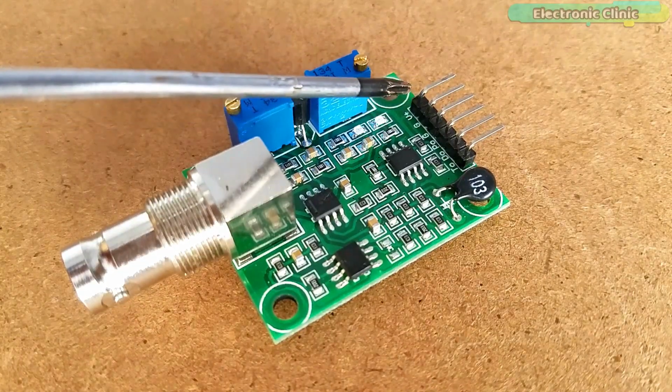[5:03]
The pH sensor interface circuit is also provided with 6 male headers which are clearly labeled. V+ is where we connect the 3.3 volts or 5 volts from the Arduino. In my case, I will connect 5 volts. But if you are planning to use this pH sensor kit with ESP8266 or ESP32, then you will need to connect this pin with 3.3 volts. The next two pins are the ground pins. You can connect any of these two pins with the ground pin of the Arduino.
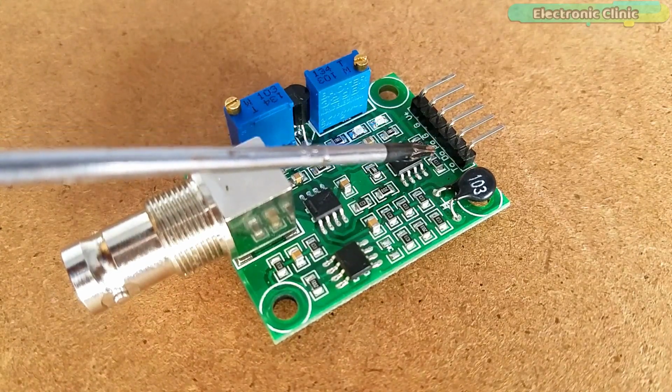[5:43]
PO is the analog output pin, which should be connected with the analog pin of the Arduino. DO is the 3.3 volt DC output pin. The last pin is the TO, which is the temperature output. Out of these 6 pins, we will only use 3 pins: V+, ground and PO.
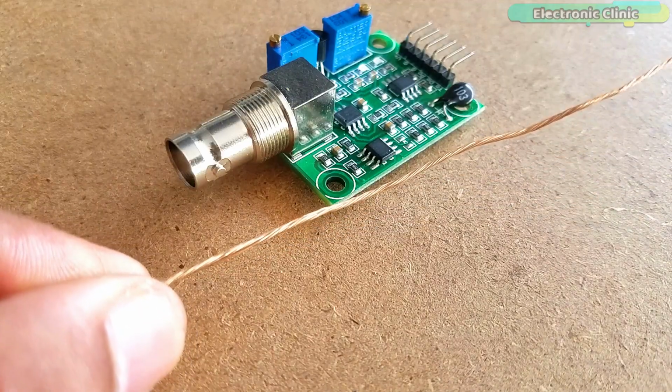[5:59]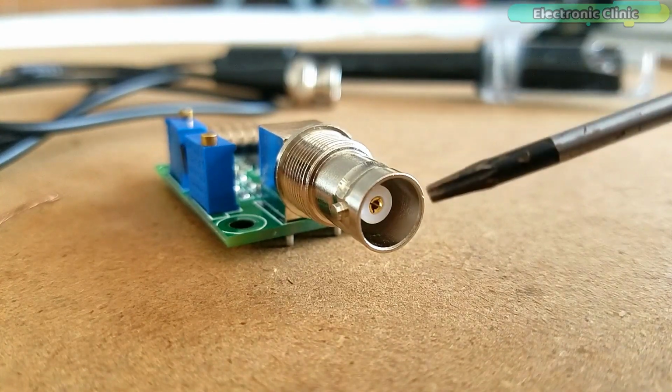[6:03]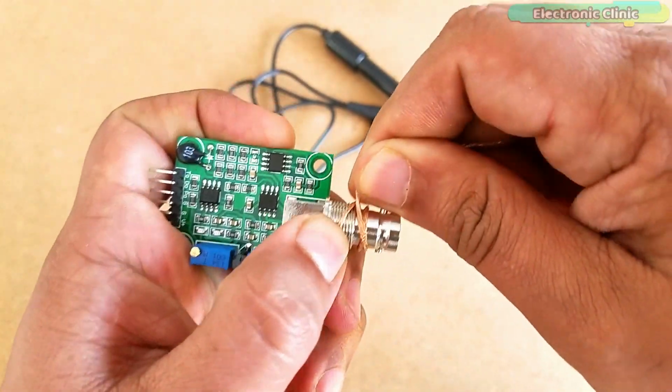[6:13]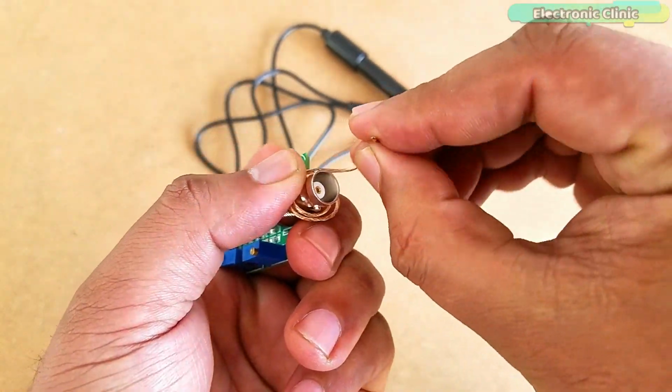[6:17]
To calibrate this sensor, you will need a wire to short the external part and the center of the probe connector. This causes a 2.5 volt tension on the PO analog output pin. I started off by connecting the external part of the BNC connector with the center of the BNC probe connector.
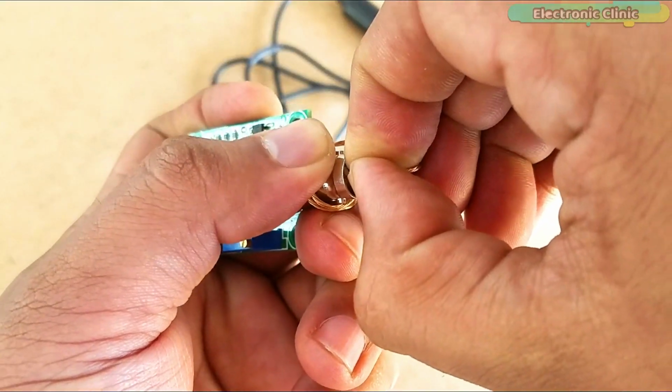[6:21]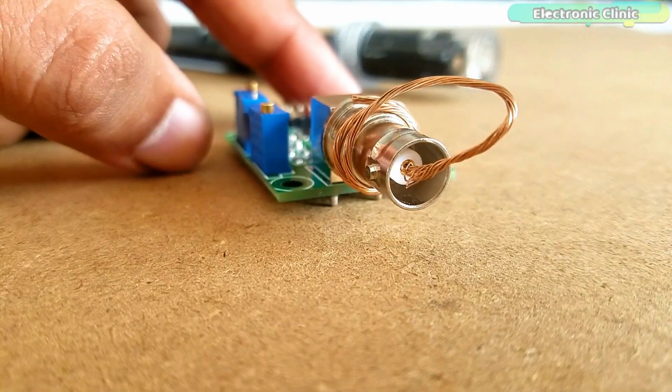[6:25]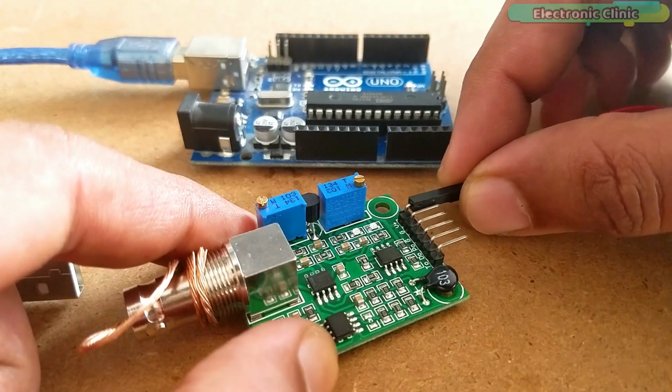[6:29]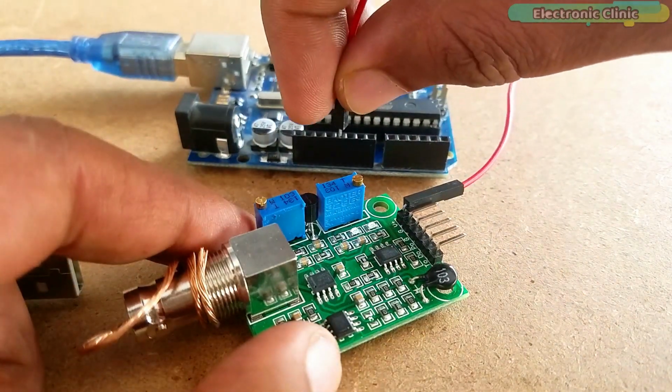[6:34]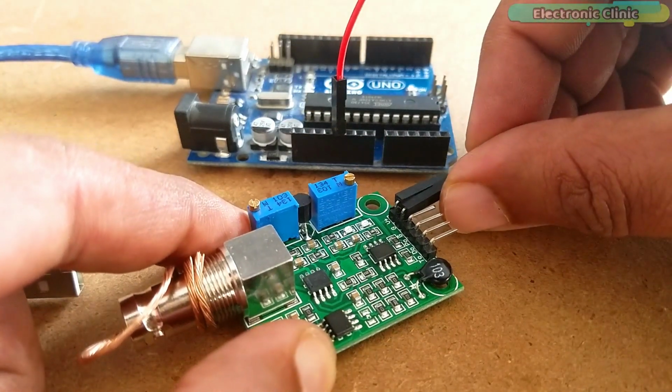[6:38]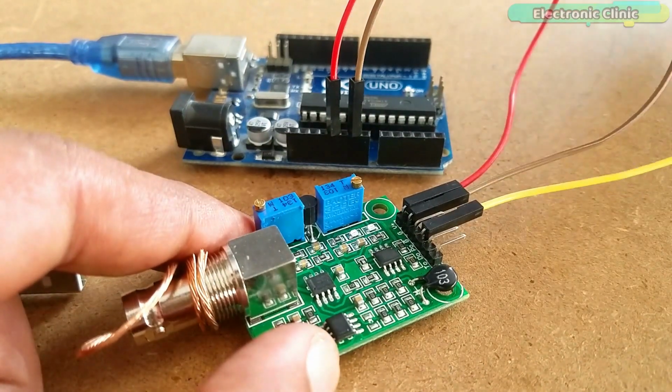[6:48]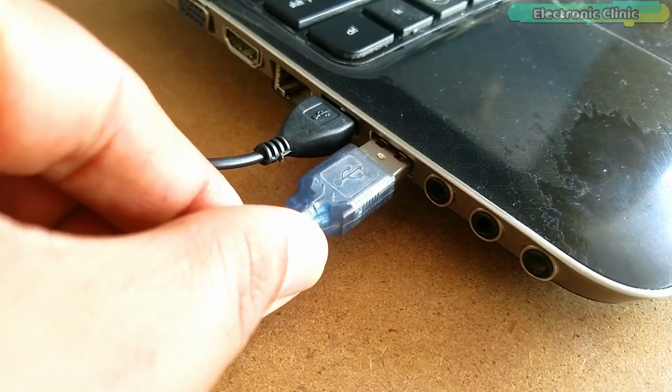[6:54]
Now connect the V+ pin with the Arduino's 5 volt. Connect the ground pin of the interface circuit with the ground pin of the Arduino. And finally, connect the analog output pin PO with the A0 pin of the Arduino. Connect Arduino with the laptop.
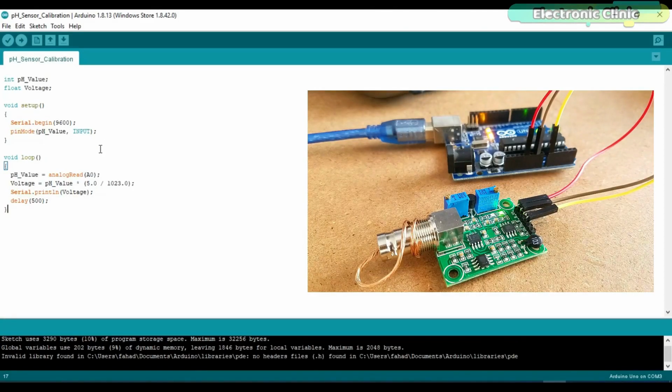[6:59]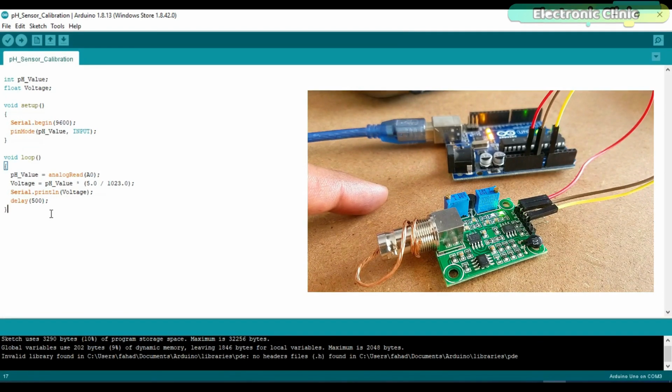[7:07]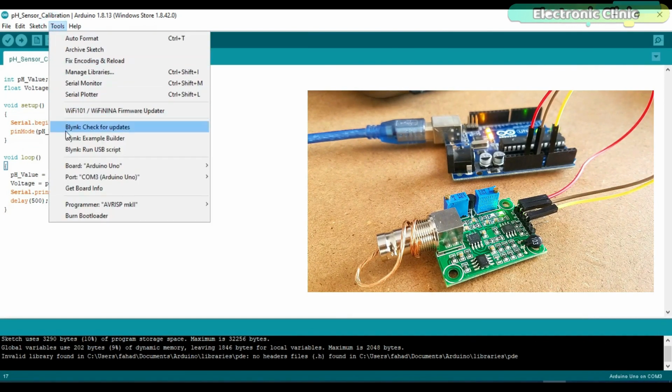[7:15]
This is a very basic program that we are going to use for calibrating the pH sensor interface circuit. The purpose of this program is to read the analog output pin PO and display the voltage on the serial monitor. Make sure the Arduino port is selected and also check if the right communication port is selected. Click on the upload button and wait for a while. As you can see, the program has been uploaded. Now the next step is to open the serial monitor.
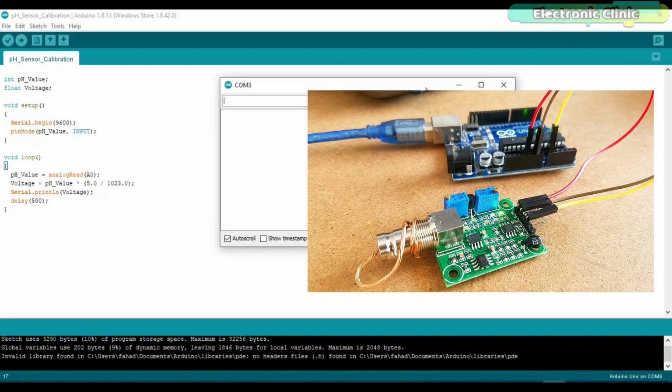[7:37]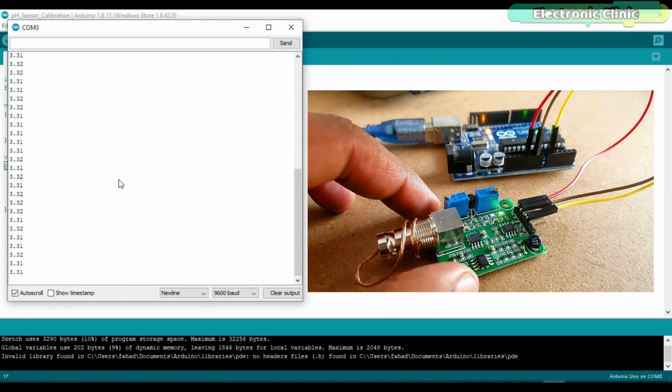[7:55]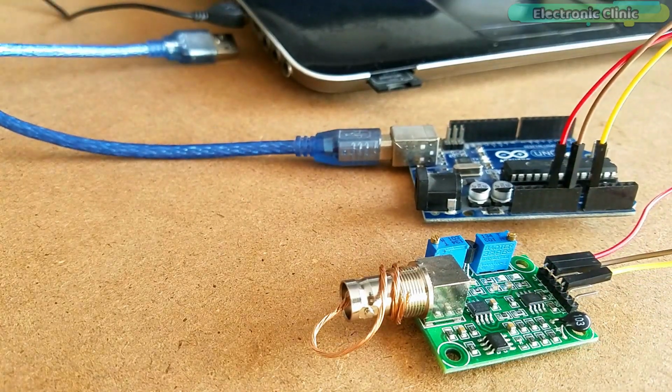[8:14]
You can see currently the voltage is around 3.31, which needs to be adjusted. You know the pH value is from 0 to 14. A pH of 7 means 2.5 volts. So we are going to set it to 2.5 volts using this trimmer. Now you can see the value is set to 2.5 volts. Disconnect the Arduino board and also remove the wire.
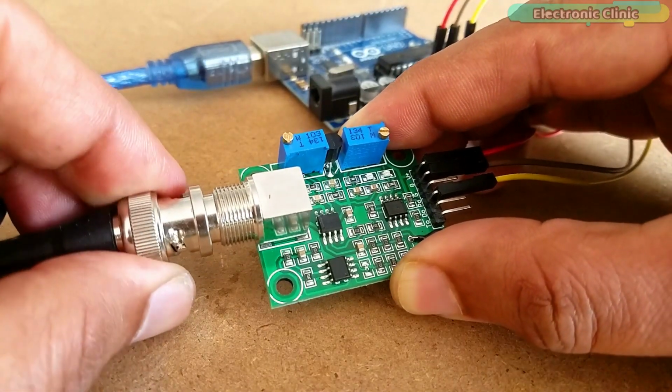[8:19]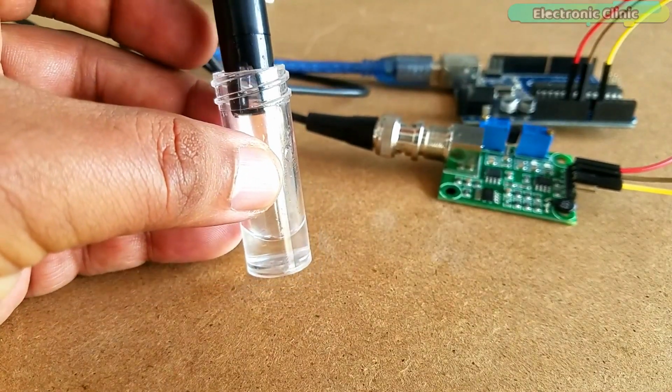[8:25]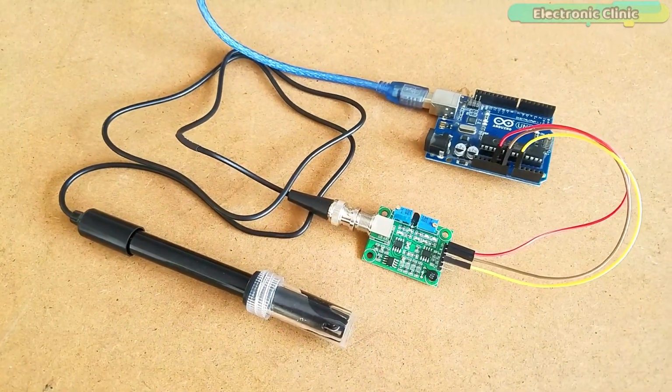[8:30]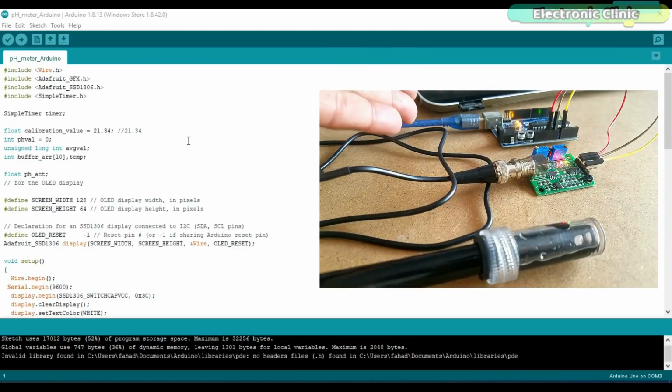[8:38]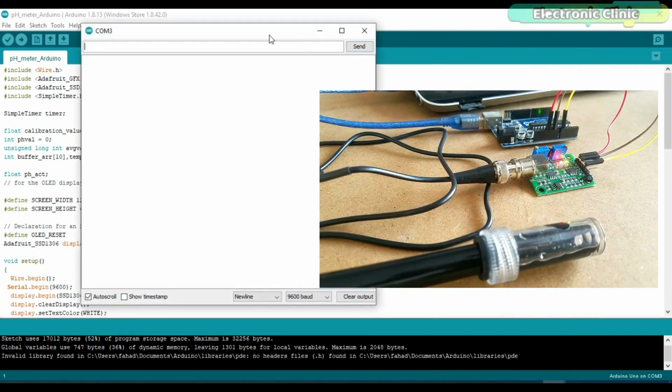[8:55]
Now it's time to connect the pH sensor with the interface board. This small container already has the distilled water. This is how it looks after connecting the pH sensor with the interface board. The wiring remains the same. Now let's check its pH value. As you can see, the Arduino is connected with the laptop. I'm going to upload this program to check the pH value. The program has been uploaded and now we can open the serial monitor.
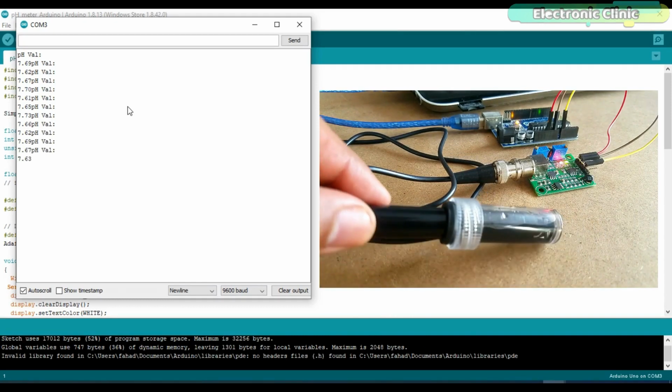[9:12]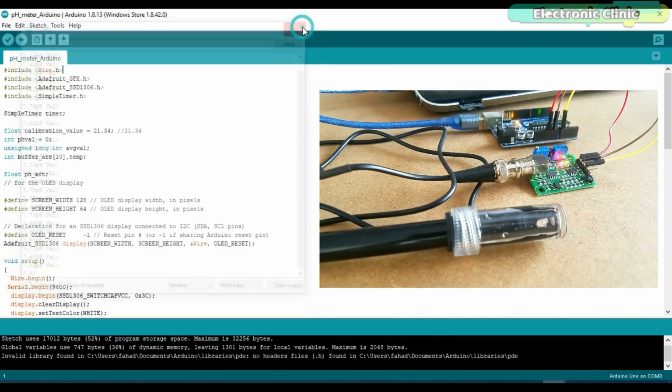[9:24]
Although we did the calibration, still you can see the pH value is not exactly 7. As the water under test is distilled water, very pure distilled water that has had little contact with air will have a pH value between 6.9 and 7. But as you can see, currently the value is a little off. This can be adjusted by changing the calibration value.
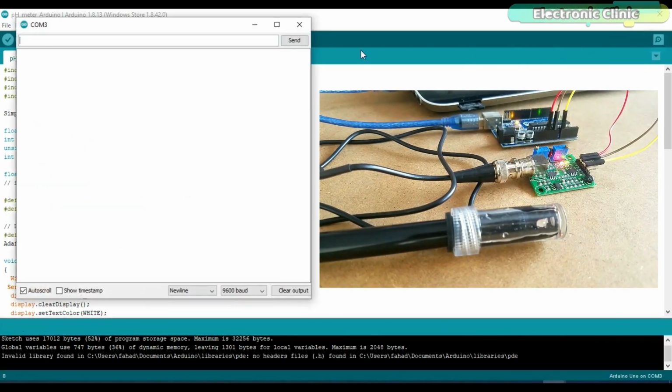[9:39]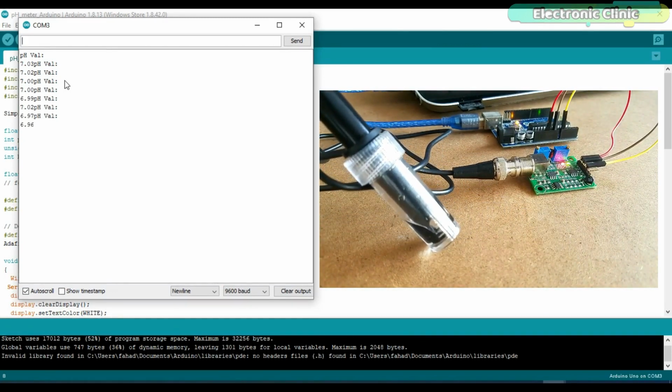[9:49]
Again, upload the program. Open the serial monitor. This time you can see the pH value of the distilled water is just perfect. The pH value is between 6.9 and 7. The pH value can be further adjusted by changing the calibration value.
We are done with the calibration and now it's time to display the pH value on the OLED display module, as it seems quite impractical to use the laptop or computer. Now we will take a look at the final circuit diagram, then we will discuss the final code, and then finally we will test the pH values of different liquids.
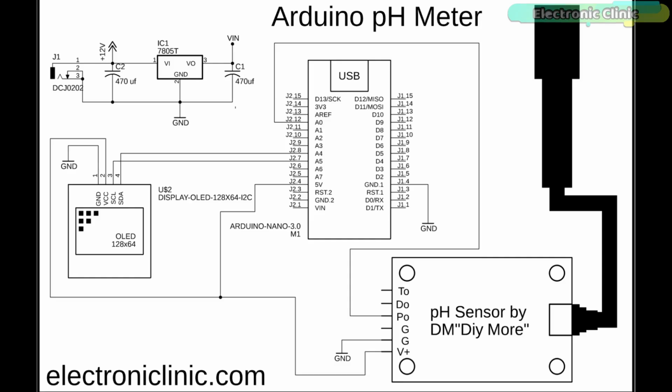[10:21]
The 5-volt regulated power supply based on the LM7805 voltage regulator is used to power up the Arduino Nano. J1 is the female DC power jack, and this is where we connect the input power supply. You can connect any voltage source between 7 and 25 volts. Two 470 microfarad capacitors are connected at the input and output sides of the voltage regulator. These are the decoupling capacitors. The output voltage should be connected with the VIN pin of the Arduino Nano.
The 128x64 SSD1306 I2C supported OLED display module is connected with the Arduino Nano, which is used to display the pH value. The SCL and SDA pins are connected with the A5 and A4 pins, while the VCC and ground pins of the OLED display module are connected with the Arduino's 5-volt and ground. The V+ pin of the pH sensor is connected with the 5-volt. The ground of the pH sensor is connected with the ground pin of the Arduino Nano. The analog output pin PO is connected with the Arduino's analog pin A0.
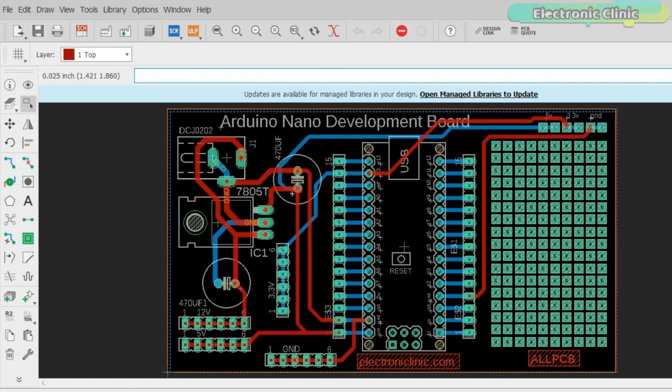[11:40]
Next, I designed a PCB for the Arduino Nano, which I will use as the development board. I added female headers for the 3.3 volt, 12 volt, 5 volt and ground. This area can be used as the vero board for soldering other electronic components. I also added female headers on the left and right sides of the Arduino Nano for connecting the jumper wires.
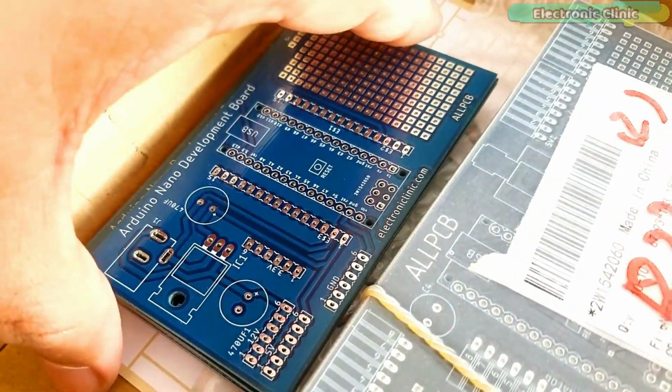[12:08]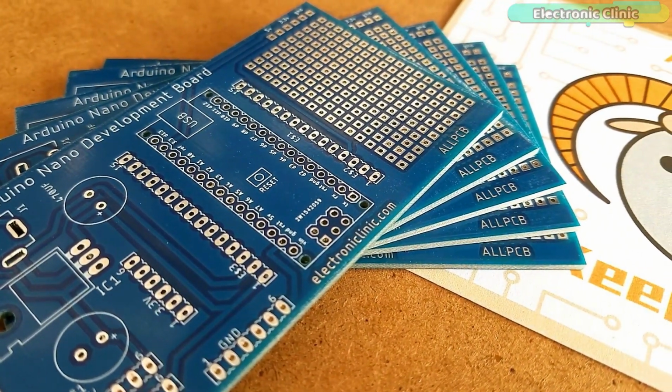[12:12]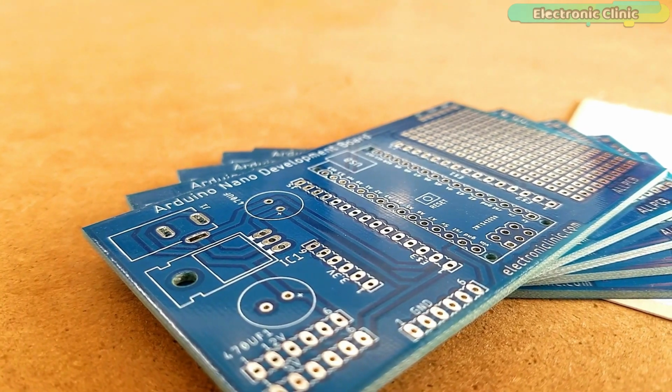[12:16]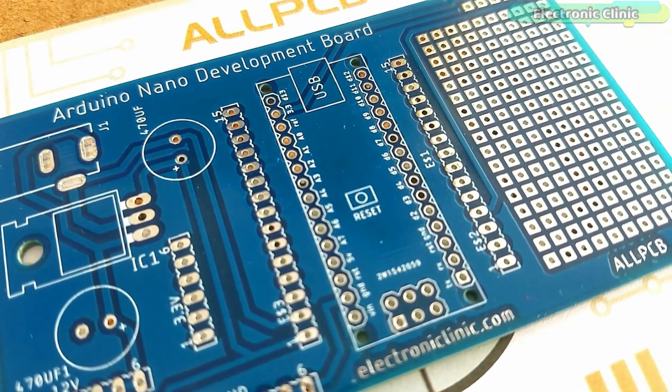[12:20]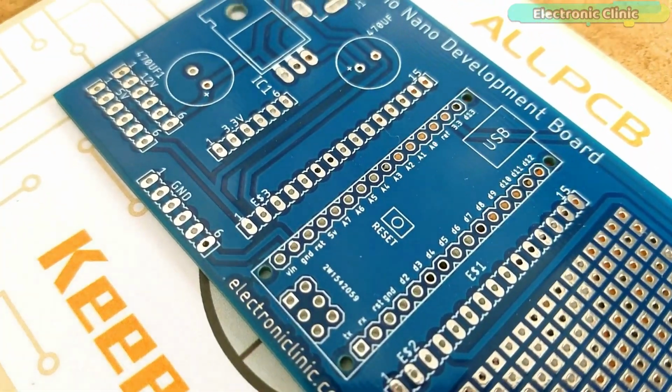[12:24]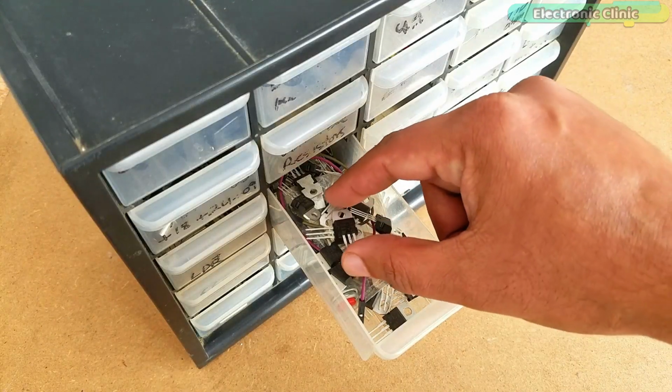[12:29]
These are the PCBs I received from the ALLPCB company. As you can see, the quality is really great. The silk screen is quite clear and the blue color solder mask looks amazing. Finally, I started off by placing the components and completed the soldering job.
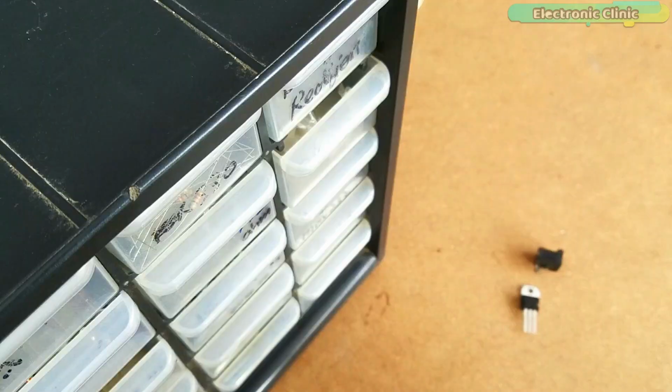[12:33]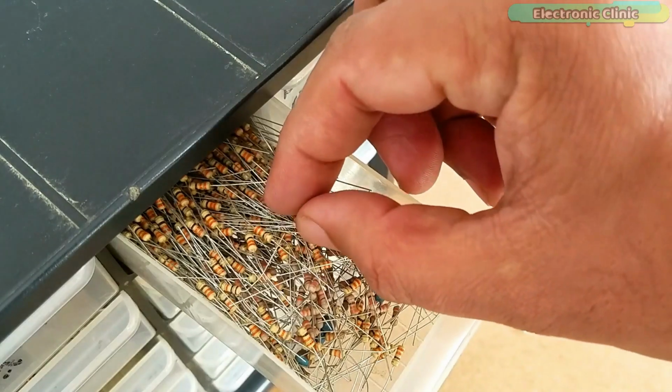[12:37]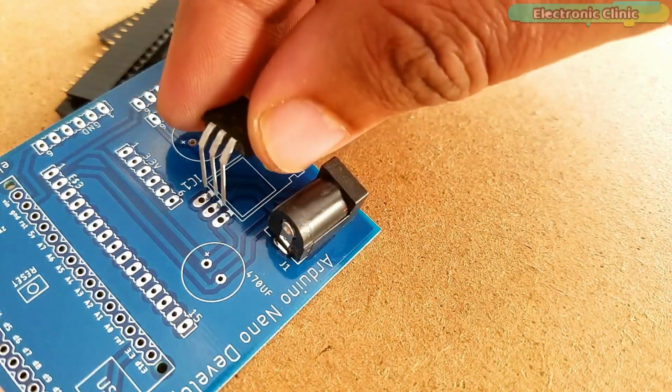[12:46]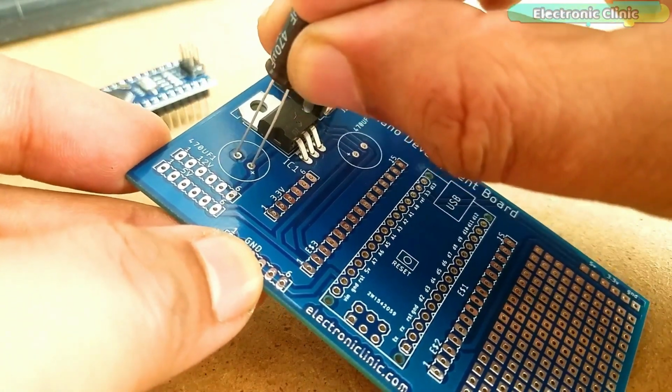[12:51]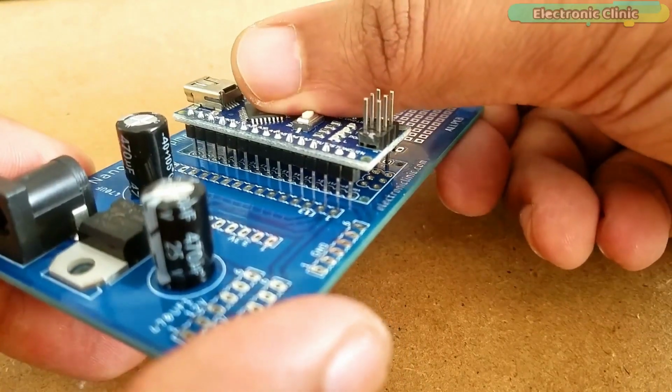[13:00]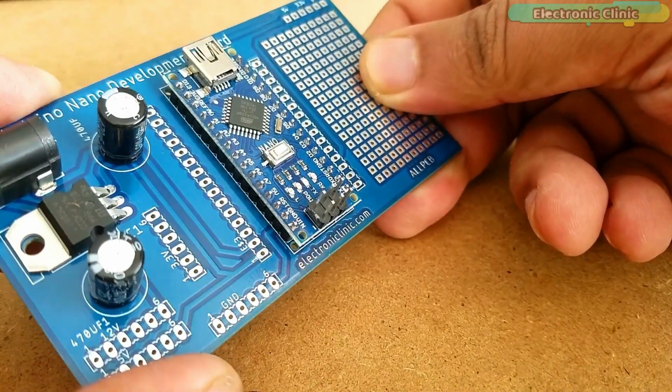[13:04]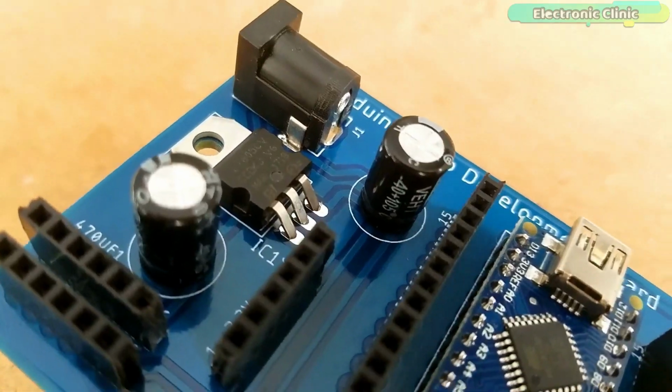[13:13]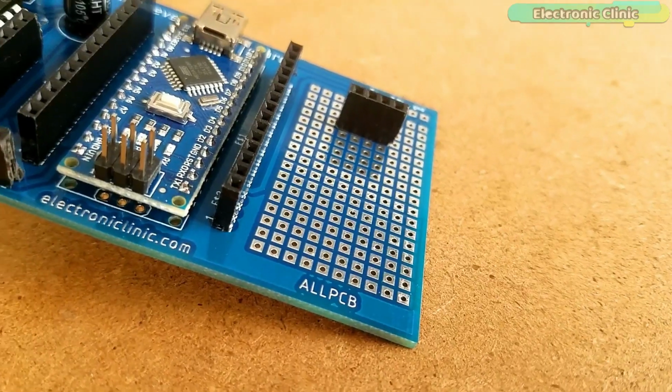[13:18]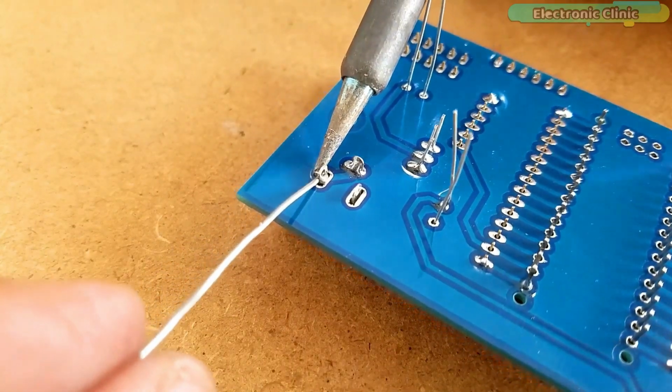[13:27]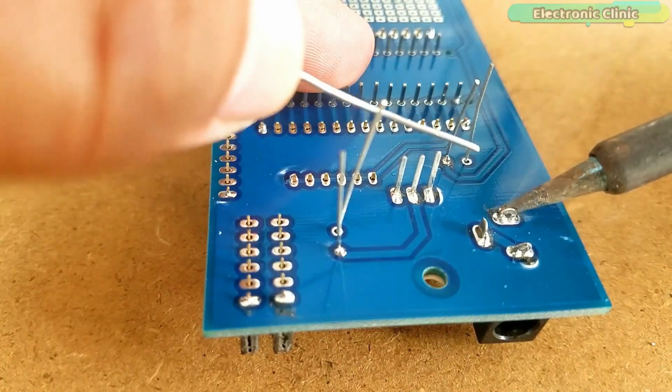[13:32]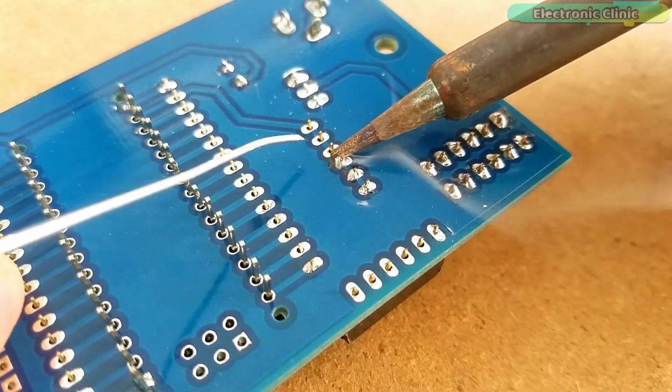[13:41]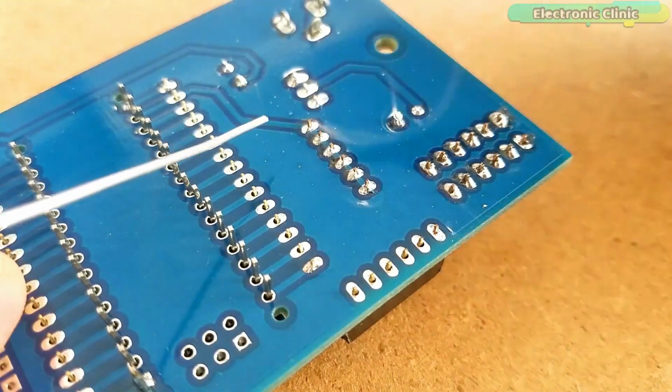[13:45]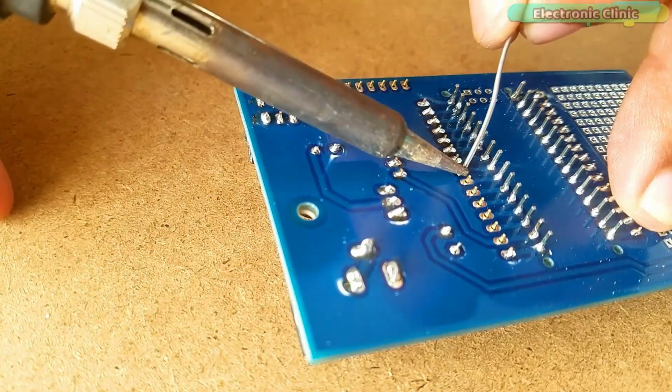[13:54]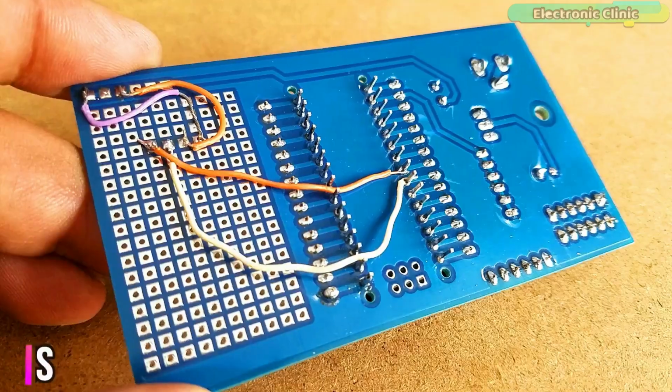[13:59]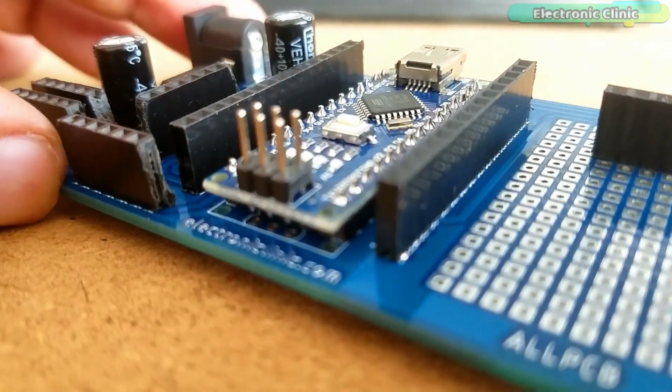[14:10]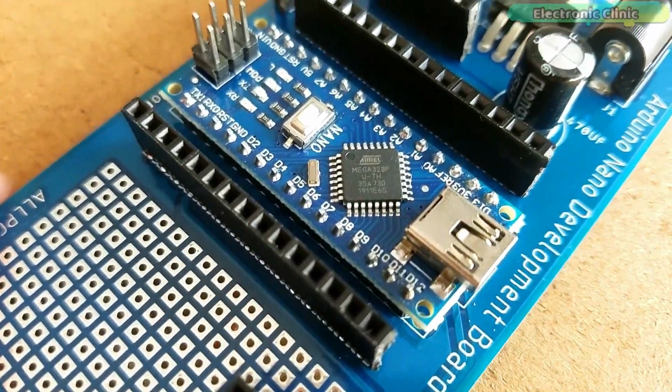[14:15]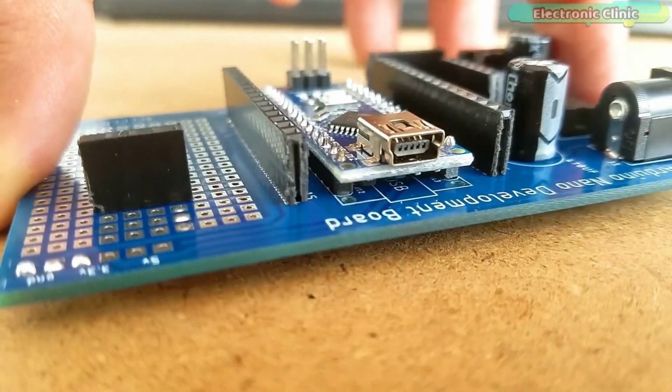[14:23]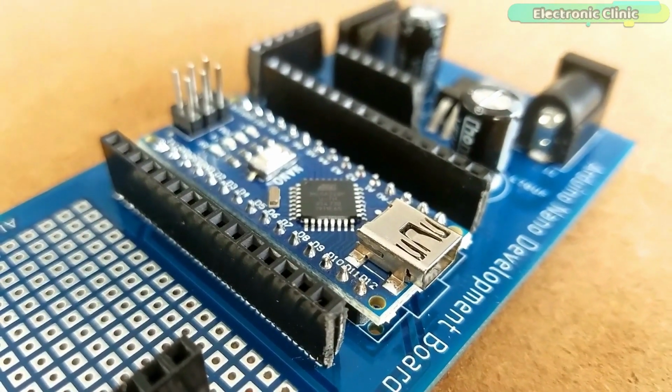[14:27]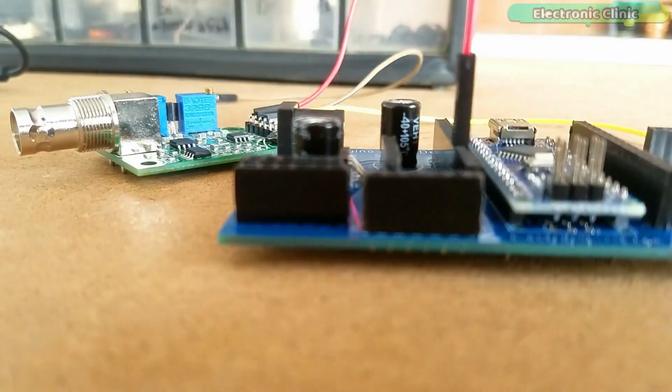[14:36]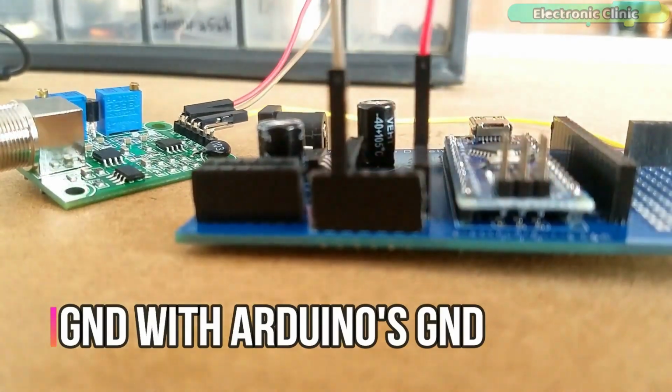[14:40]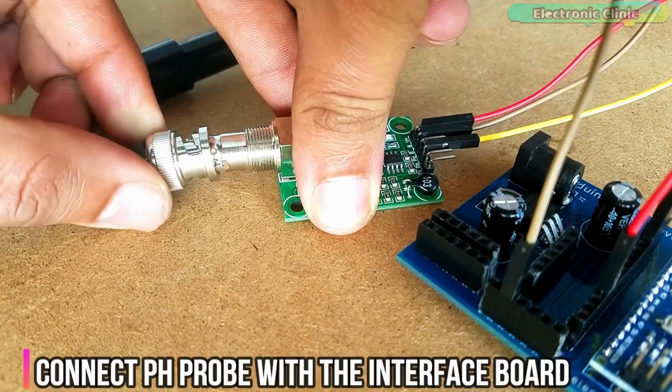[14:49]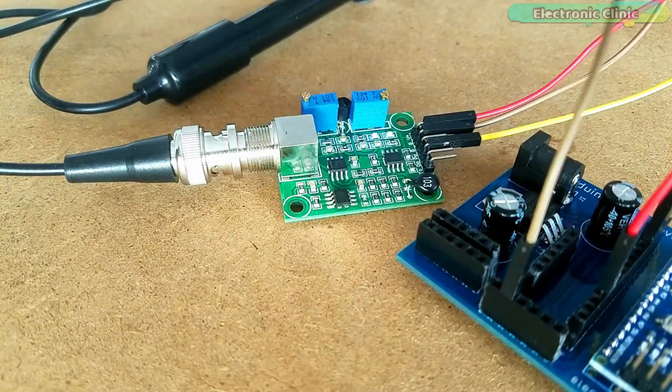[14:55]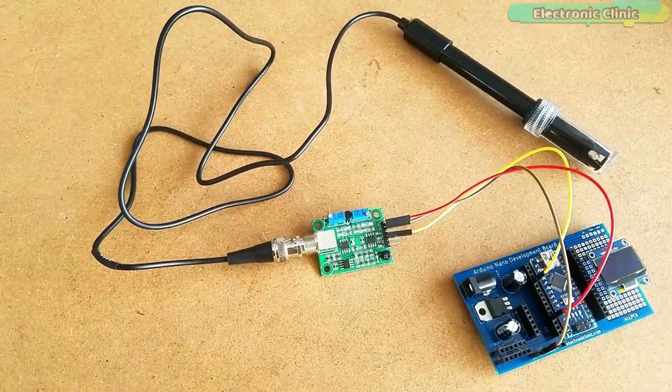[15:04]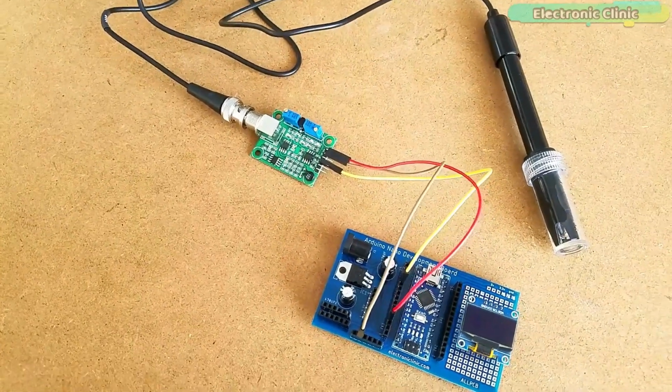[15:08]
This is how everything looks after soldering. Finally, I connected the pH sensor interface circuit with the Arduino Nano. And I also connected the 128x64 OLED display module. Our interfacing is completed and now it's time to take a look at the Arduino programming.
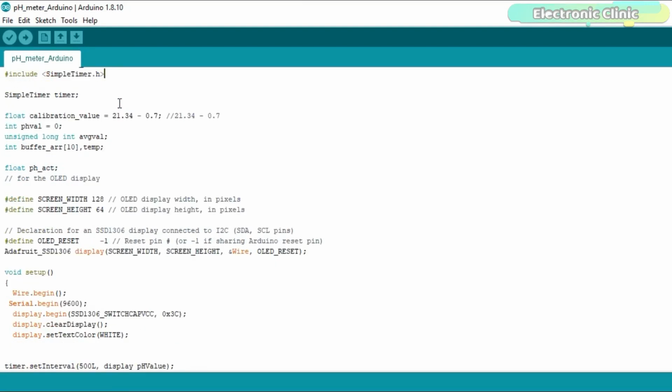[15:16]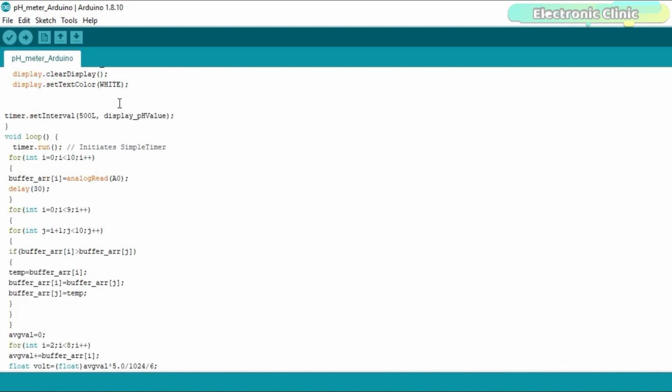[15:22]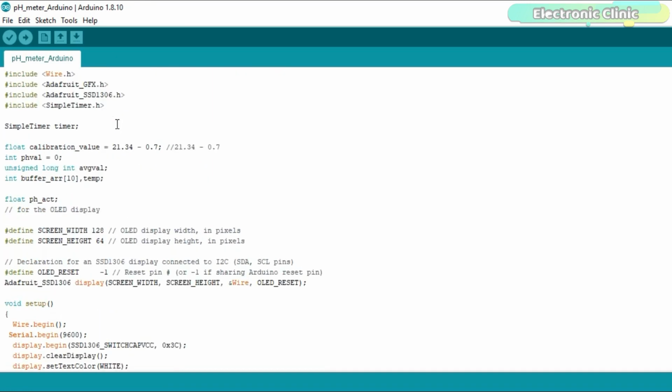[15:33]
Before you start the programming, first of all, make sure you download all the necessary libraries from our website electronicclinic.com. I will provide a link in the description. This is a very simple and basic program to find the pH value of different liquids. For the complete explanation, read my article. I have already uploaded this program. Let's watch the Arduino-based pH meter in action.
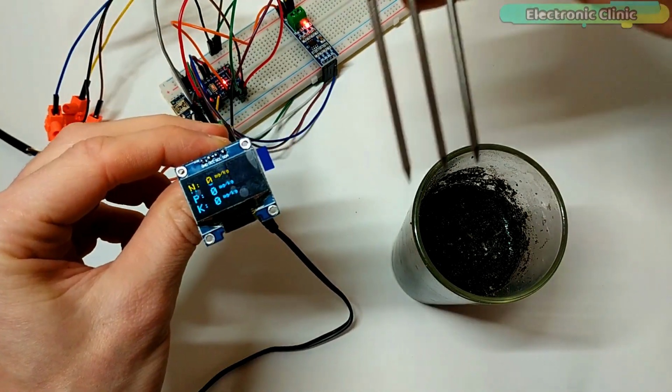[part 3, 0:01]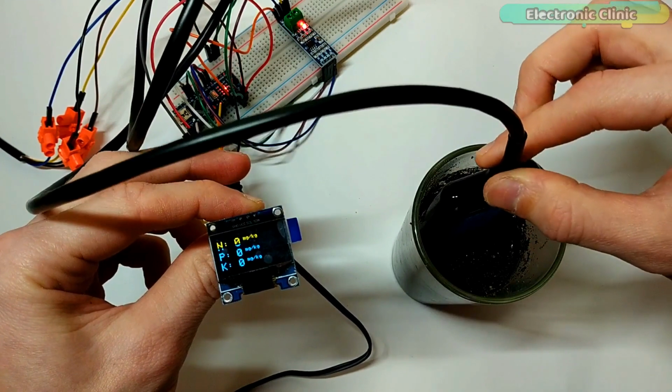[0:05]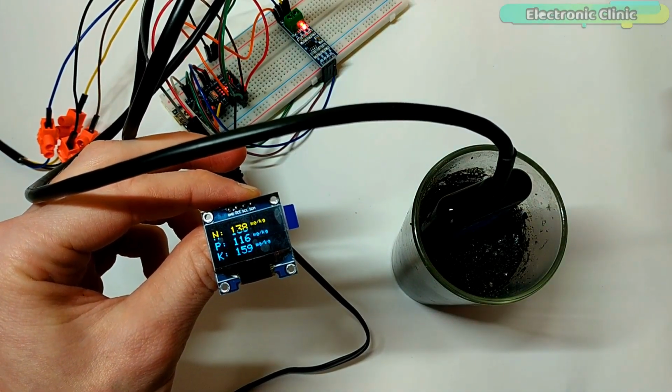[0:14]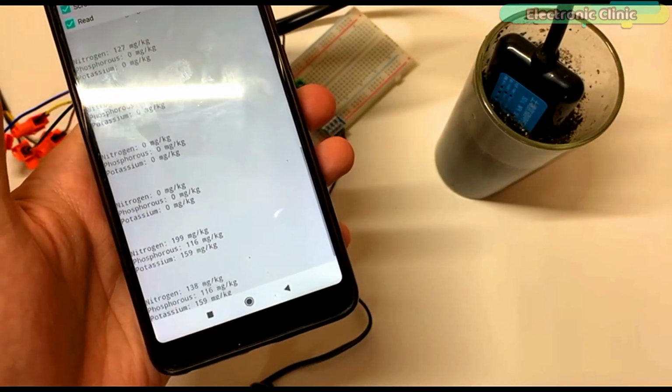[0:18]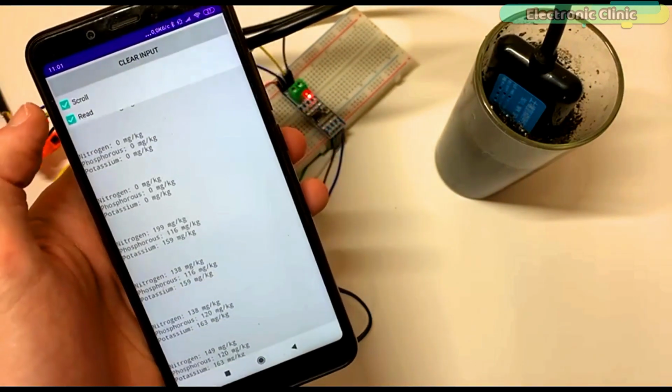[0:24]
In today's episode, you will learn how to measure the soil nutrient content like nitrogen, phosphorus and potassium using the most accurate, fast and stable soil NPK sensor, Arduino Nano, I2C supported OLED display module, HC05 or HC06 Bluetooth module, and an Android cell phone application designed in Android Studio.
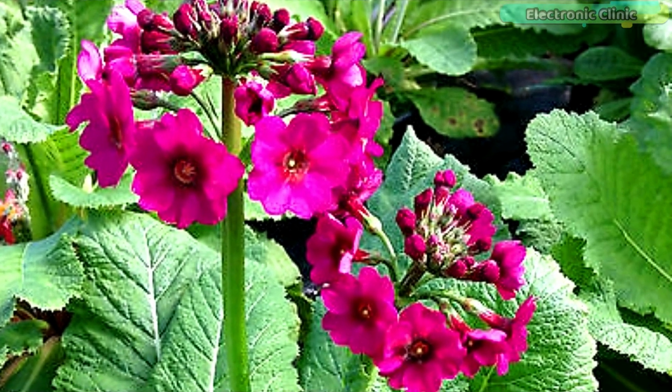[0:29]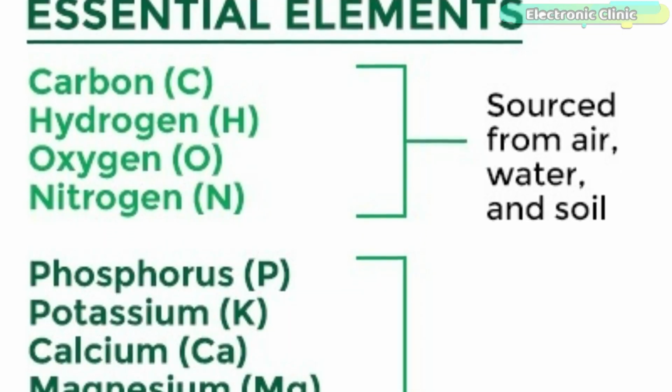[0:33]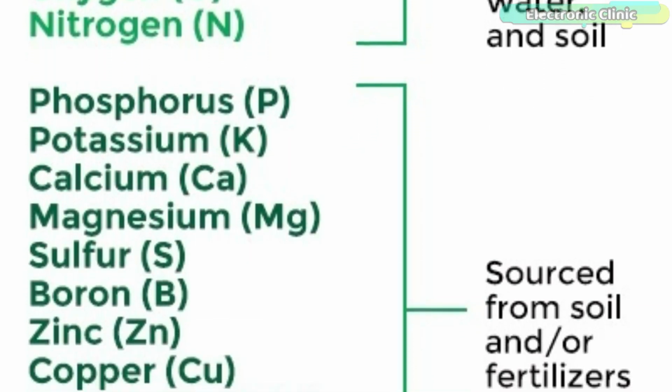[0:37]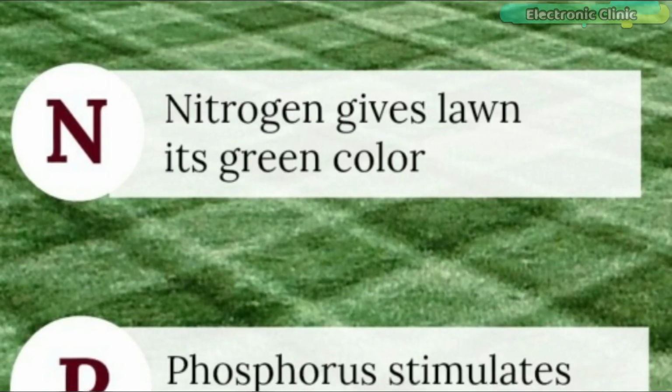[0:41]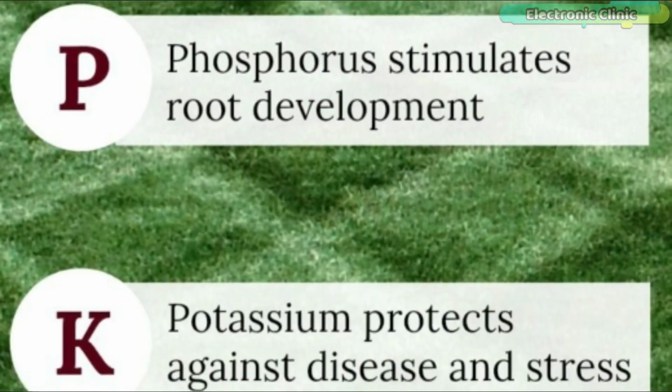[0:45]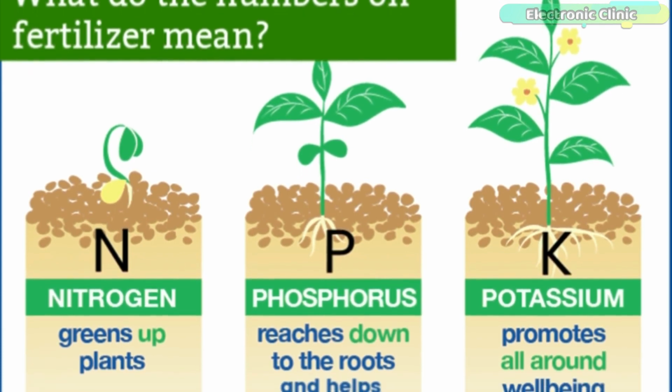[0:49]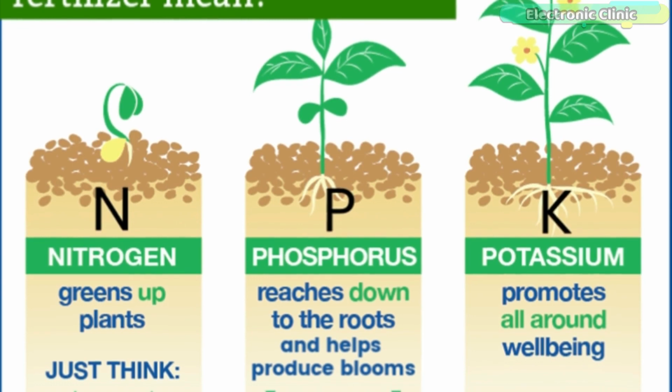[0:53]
You know, all growing plants need 17 essential elements to grow to their full genetic potential. Of these 17 elements, 14 are absorbed by plants through soil, while the remaining 3 come from air and water. Nitrogen, phosphorus, and potassium are, in short, NPK, or the big 3 primary nutrients in commercial fertilizers. Each of these fundamental nutrients plays a key role in plant nutrition.
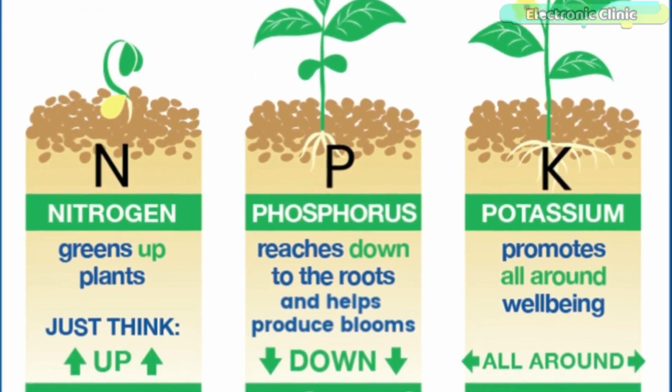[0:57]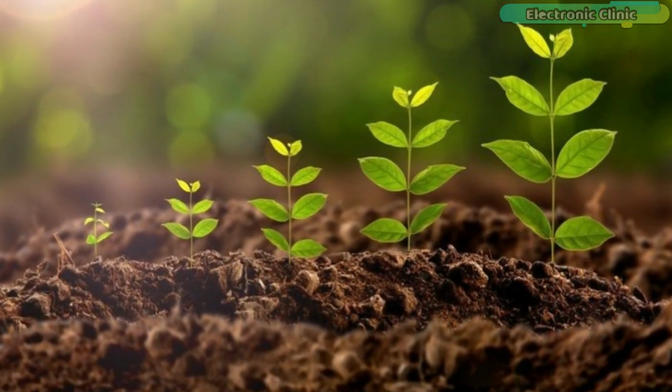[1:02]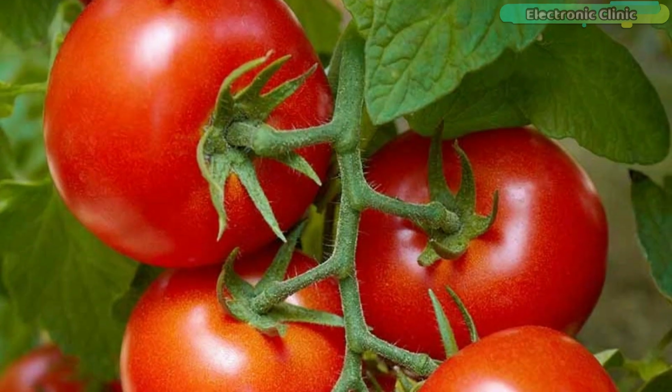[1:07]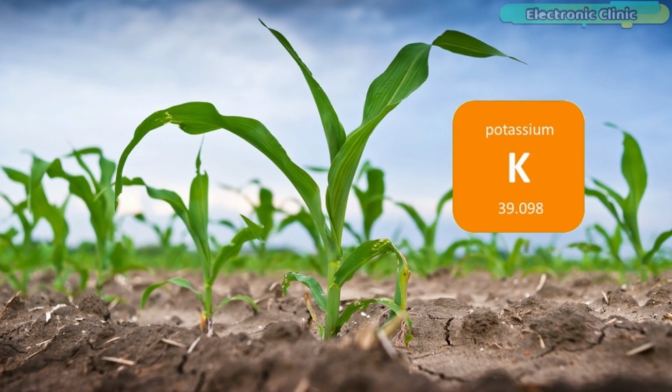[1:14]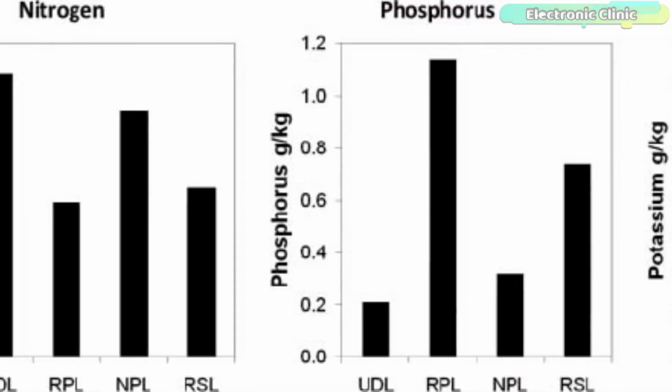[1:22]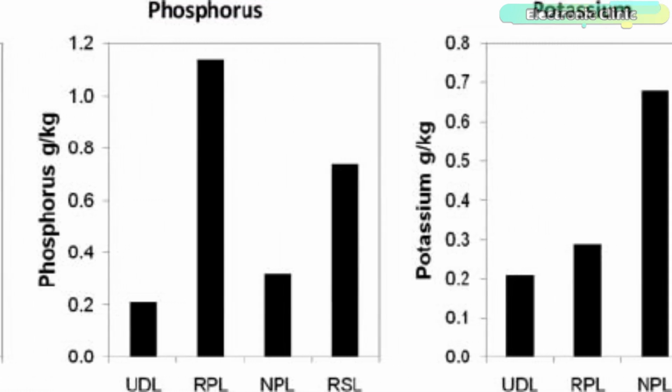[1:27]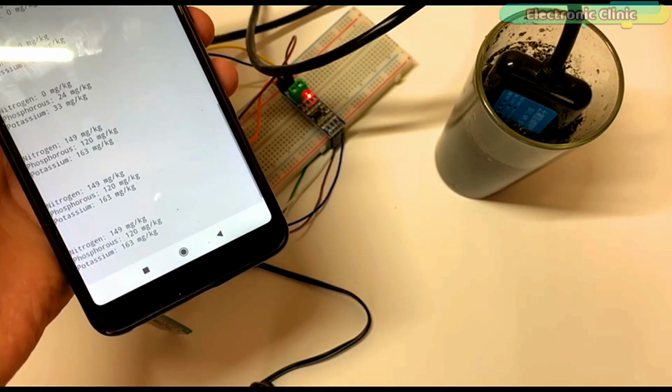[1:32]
Nitrogen, phosphorus and potassium are really important to soil because nitrogen is used by plants for lots of leaf growth and good green color. Phosphorus is used by plants to help form new roots, make seeds, fruits and flowers, while potassium helps plants make strong stems and keep growing fast. A certain level of soil nutrients like nitrogen, phosphorus and potassium should be maintained in the soil, which is only possible if you know how to measure these 3 elements.
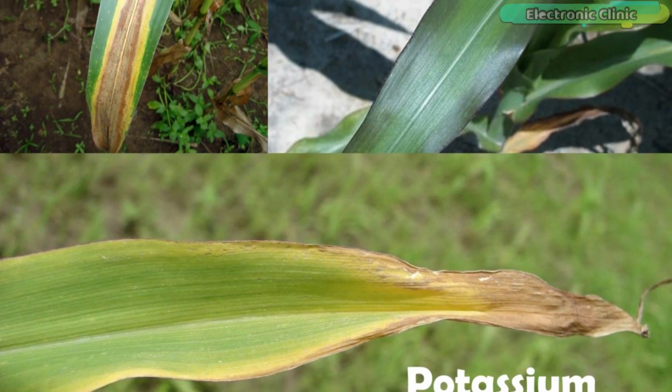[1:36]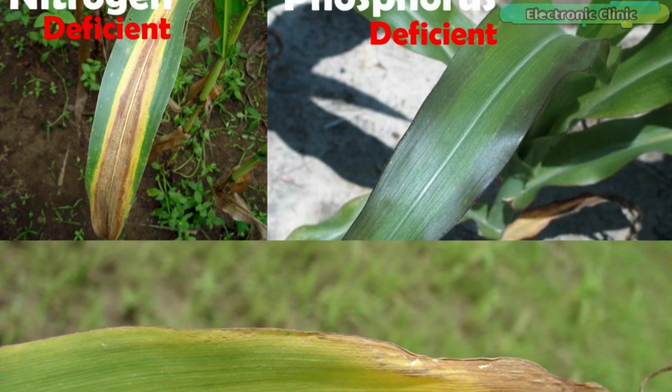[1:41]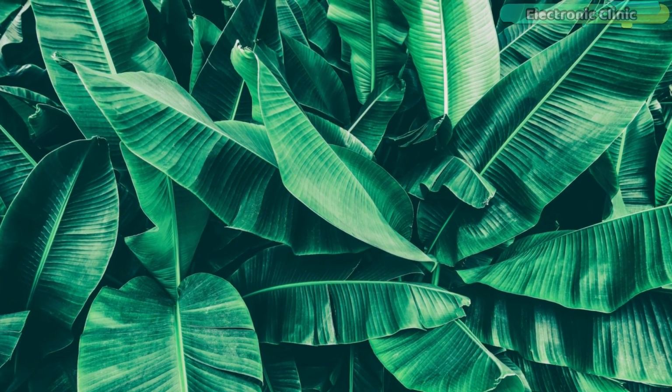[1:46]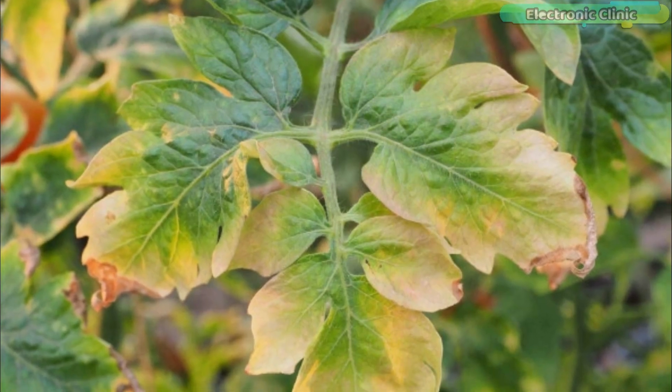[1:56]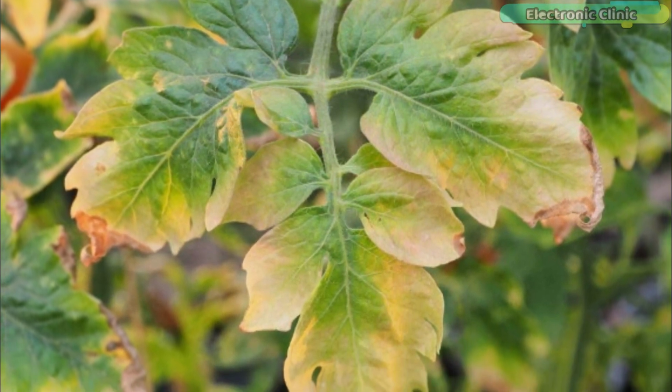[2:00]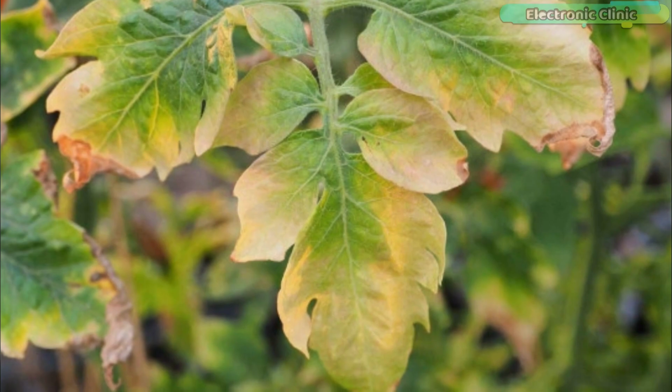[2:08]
Let's take the corn plant as an example. This is what happens to the corn leaves when the nitrogen, phosphorus and potassium nutrients are less in the soil. On the other hand, if you add more nitrogen, your plants may look lush and green, but their ability to fruit and flower will be greatly reduced. If you add more phosphorus, this will reduce the plant's ability to take up required micronutrients, particularly iron and zinc. This causes the plants to grow poorly and even die.
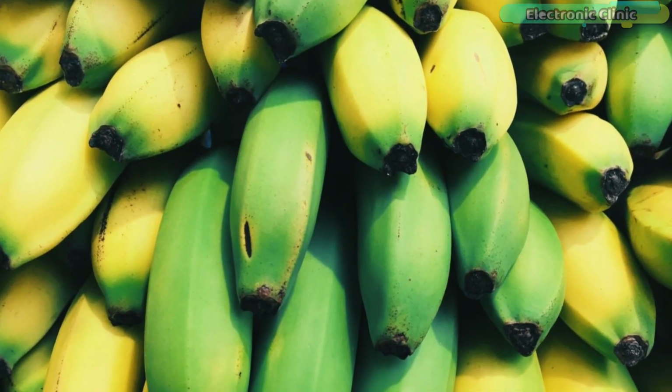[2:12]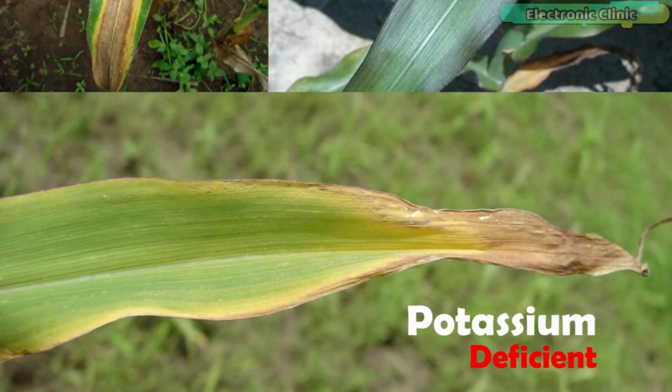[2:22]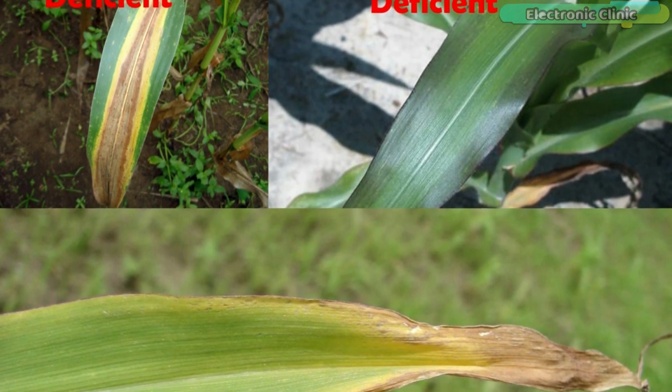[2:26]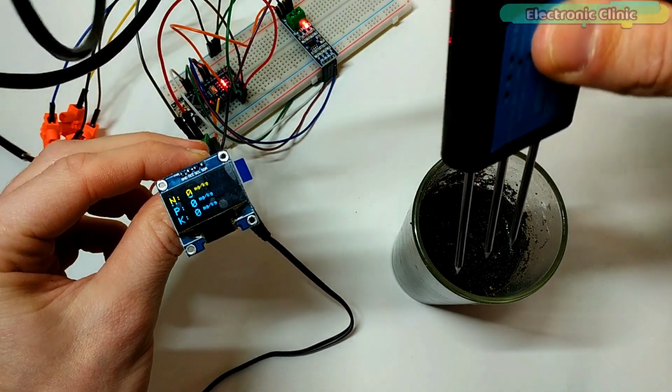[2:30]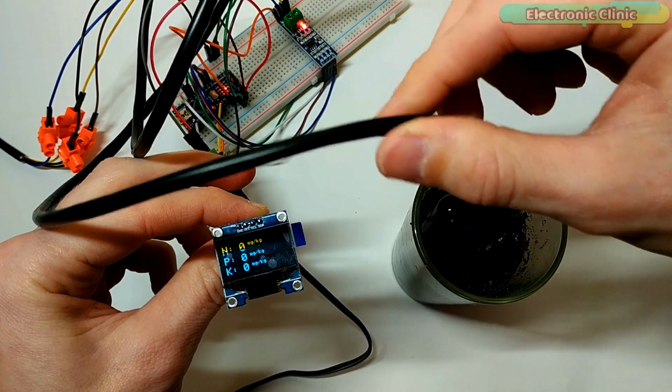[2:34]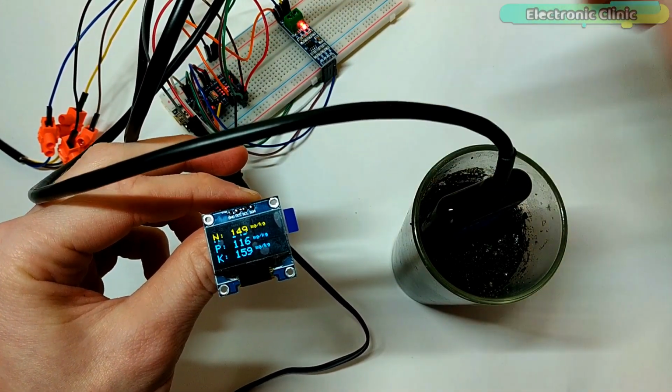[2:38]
The same thing happens when you add too much potassium in the soil. This disrupts the uptake of other important nutrients such as calcium, nitrogen, and magnesium. So now you understand the excess and deficiency of these 3 elements is not good for the plants. So before you are planning to add the fertilizer, first take a few samples and check the nitrogen, phosphorus and potassium level using the soil NPK sensor.
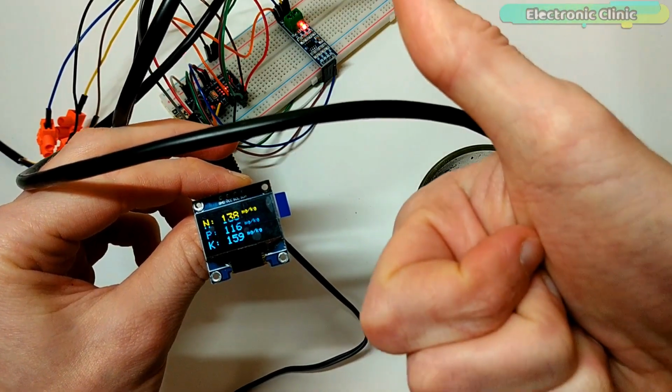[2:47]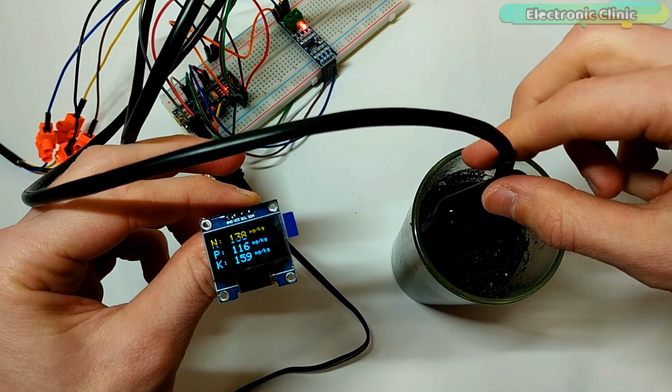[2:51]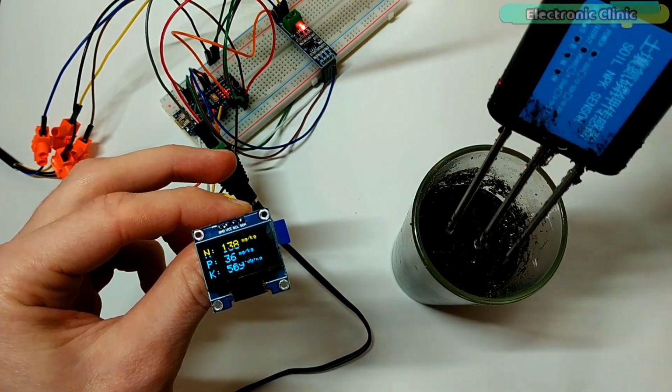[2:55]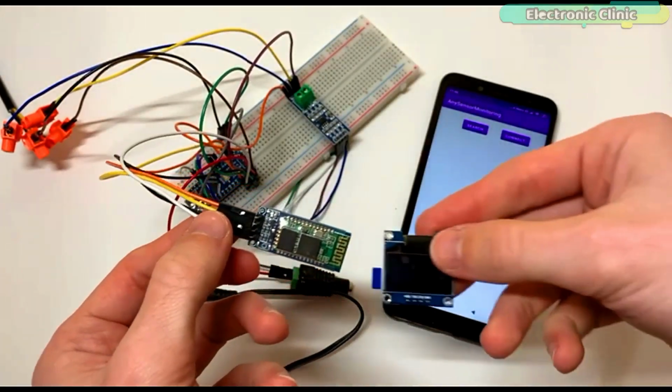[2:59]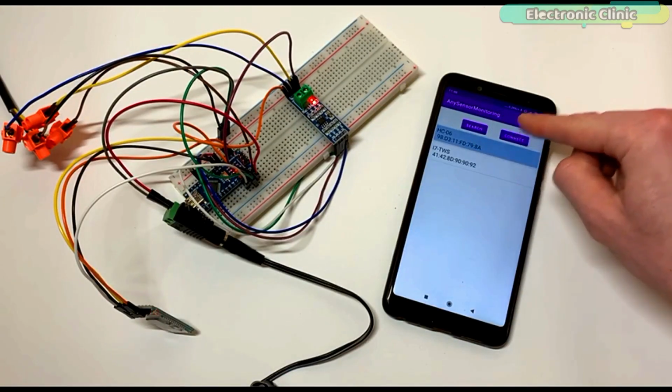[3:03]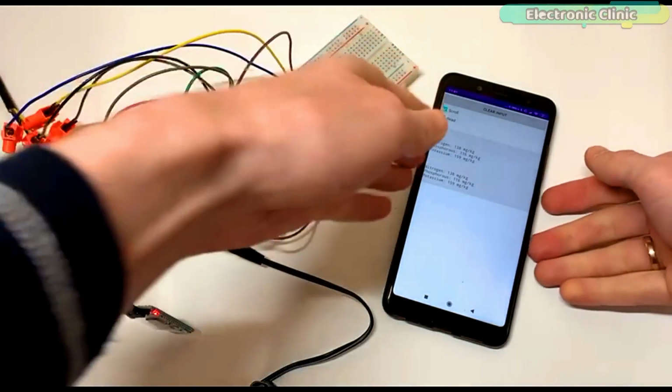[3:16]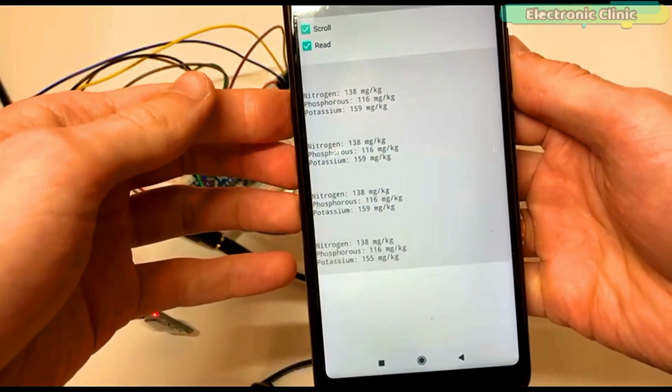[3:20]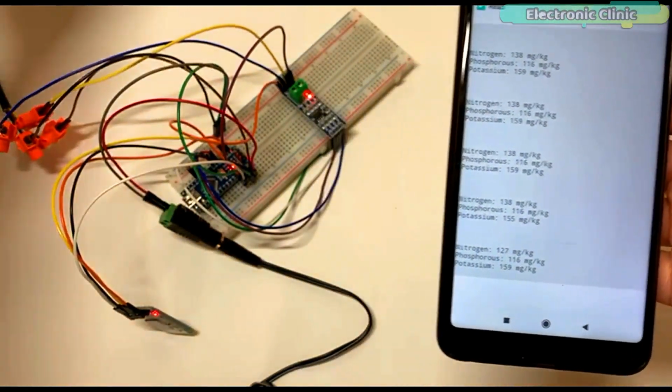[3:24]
You can also connect the OLED display module. This way you can monitor the NPK values both on the OLED display module and also on the Android cell phone application. So anyhow, now you know exactly what you are going to learn after watching this video. Without any further delay, let's get started.
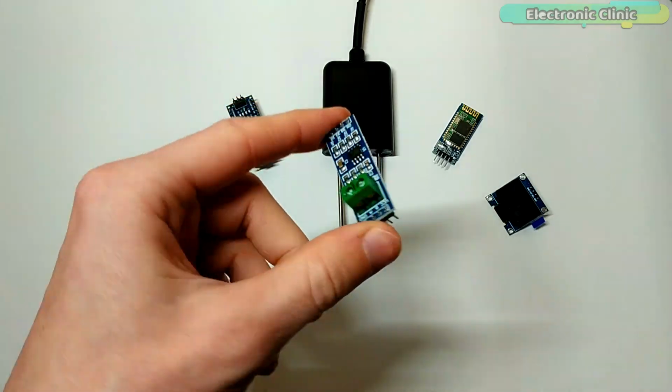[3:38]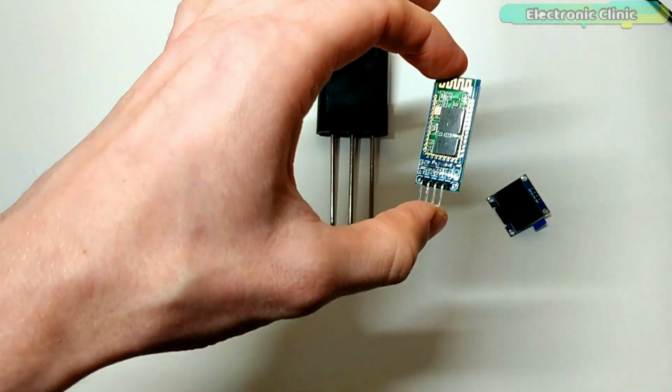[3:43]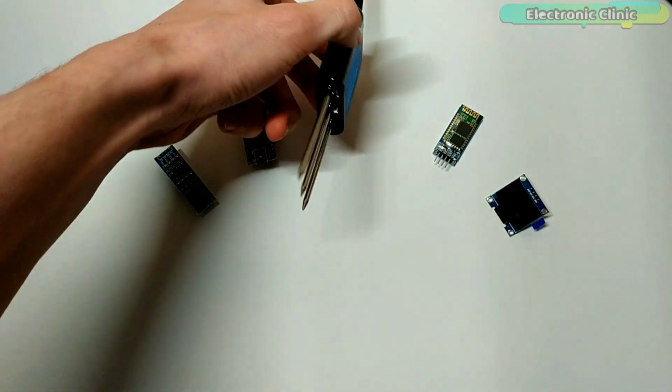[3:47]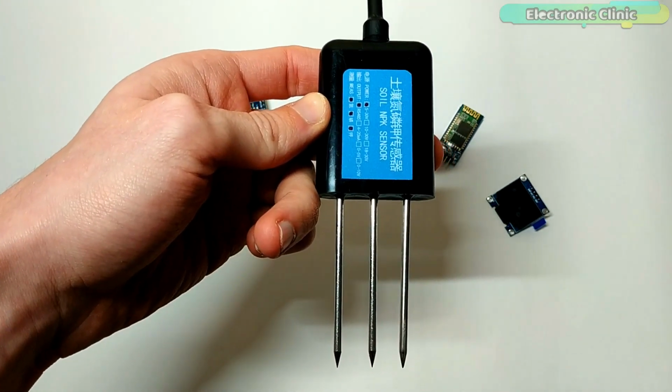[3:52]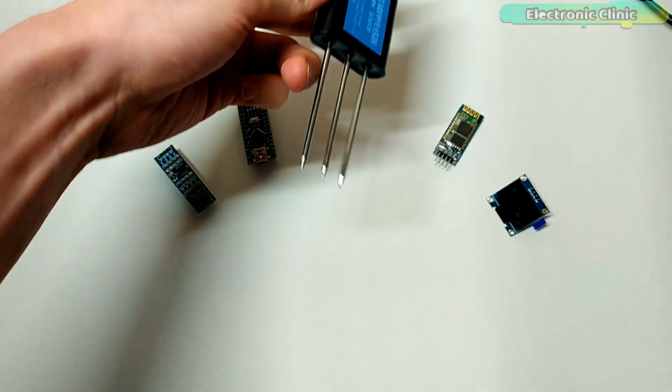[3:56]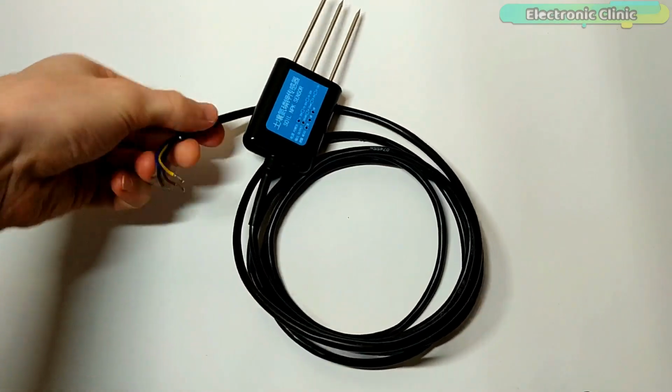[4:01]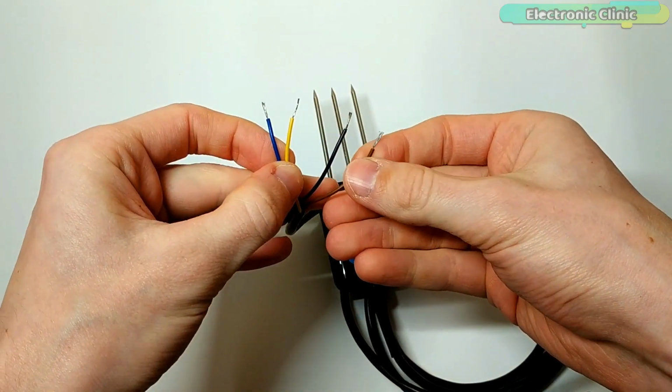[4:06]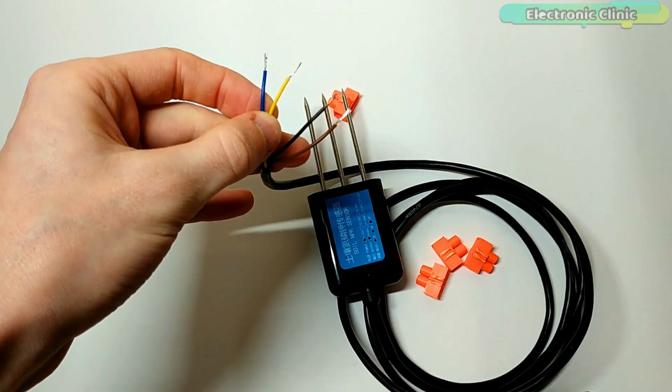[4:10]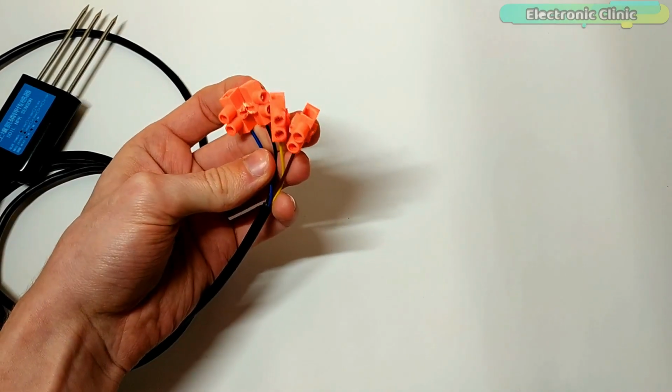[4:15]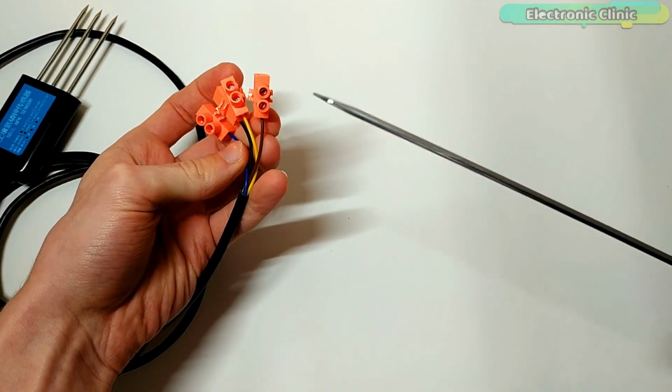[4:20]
This is the soil NPK sensor. N for the nitrogen, P for the phosphorus and K for the potassium. So this is basically the soil nitrogen, phosphorus and potassium 3-in-1 fertility sensor, which is used for detecting the content of nitrogen, phosphorus and potassium in the soil. This soil NPK sensor is considered to be the most high precision, accurate, with accuracy up to ±2%, fast speed measurement and with increased stability.
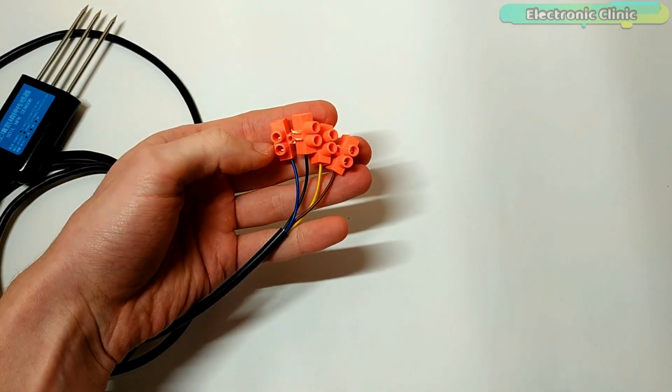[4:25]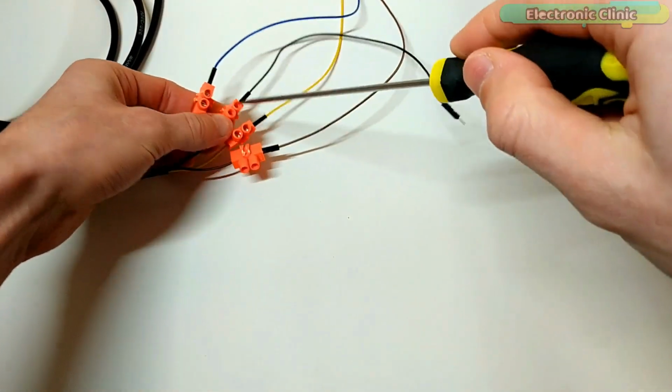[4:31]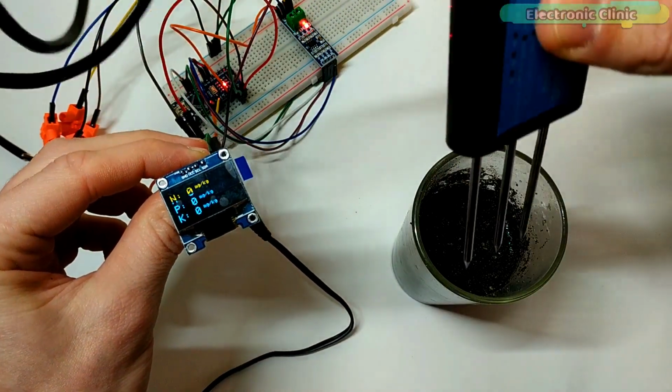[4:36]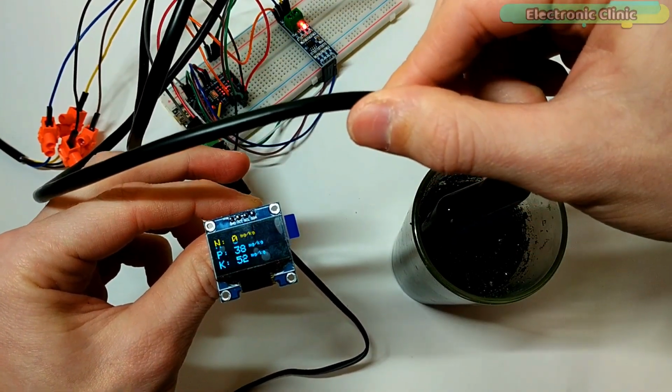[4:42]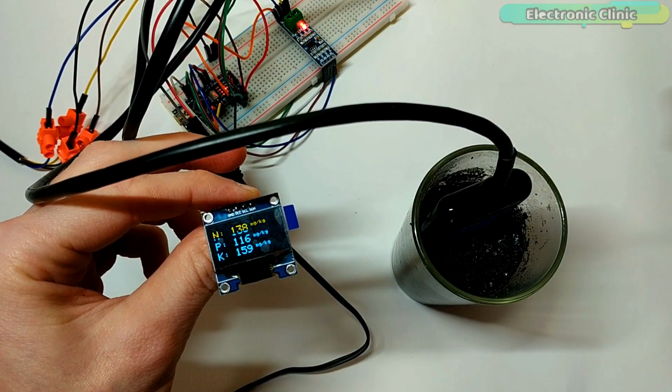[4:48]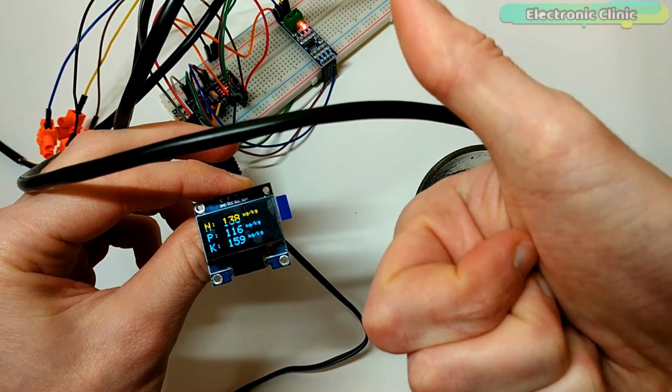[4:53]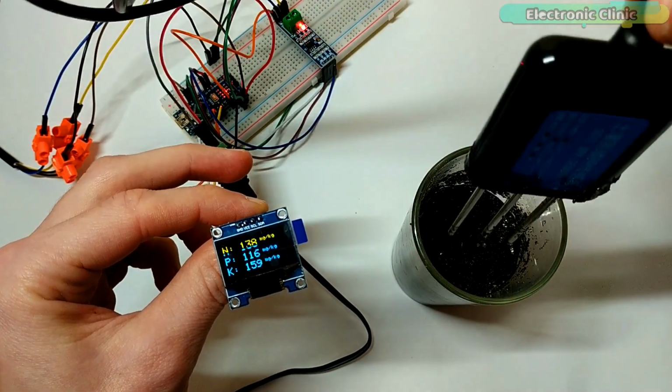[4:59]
The resolution of this soil NPK sensor is up to 1 mg per kg or 1 mg per liter. This is an easy to carry sensor and can even be used by non-professionals. All you need is insert these stainless steel rods into the soil and read the soil content. So the soil NPK sensor gives the user an accurate understanding of the soil fertility status. Thus the user can measure the soil condition at any time, and then according to the soil condition, the soil fertility can be balanced to achieve a suitable growth environment for the plants.
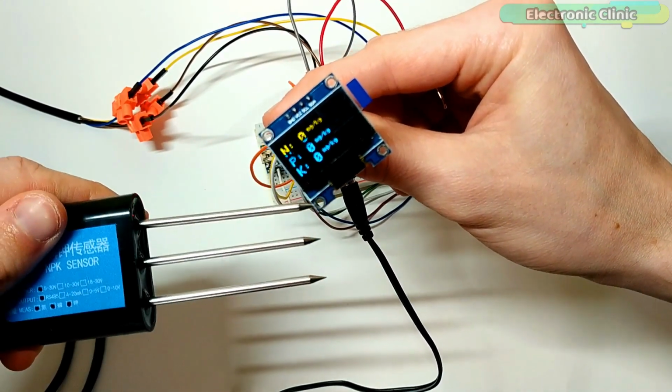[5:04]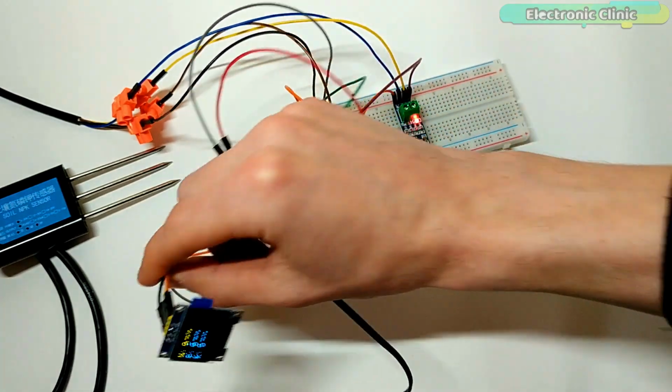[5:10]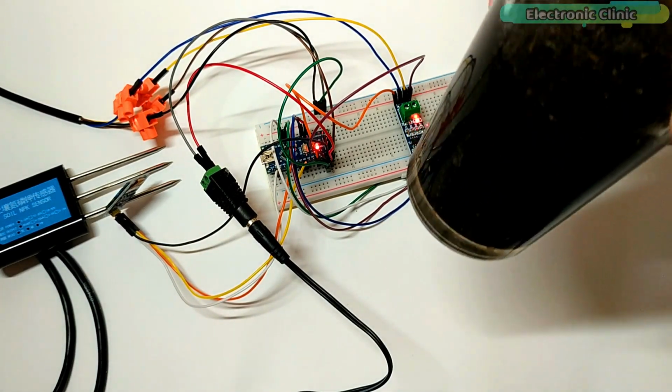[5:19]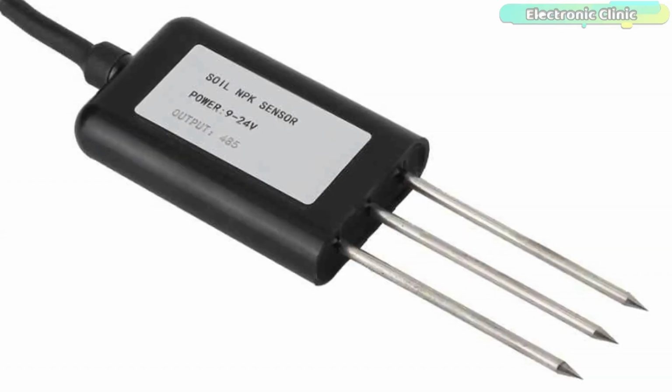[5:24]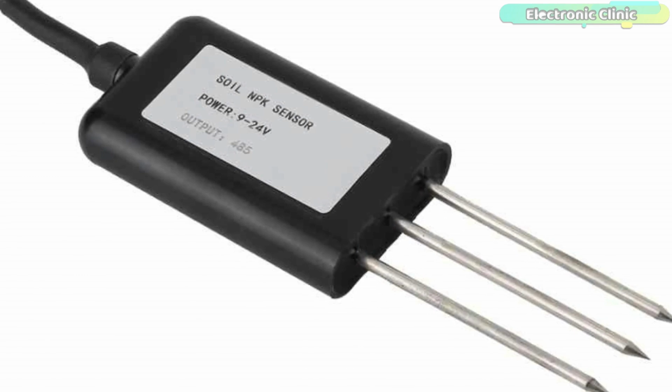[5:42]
This soil NPK sensor is provided with such high-quality stainless steel probes which are completely rust-resistant, electrolytic resistant, salt and alkali corrosion resistant. Therefore, this soil NPK sensor is suitable for all kinds of soil. Another feature that I really like is its ability to detect alkaline soil, acid soil, substrate soil, seedling bed soil and coconut bran soil. Moreover, this soil NPK sensor is IP68 grade waterproof and dustproof to ensure the normal operation of components for a long time.
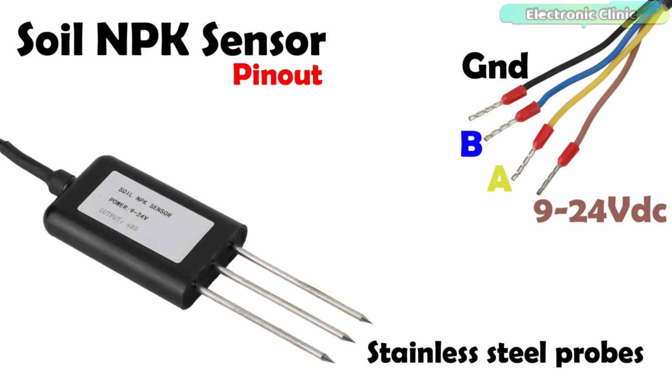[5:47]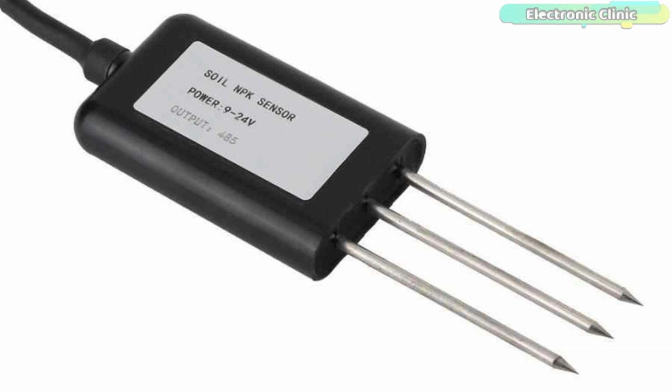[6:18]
The soil NPK sensor has a total of 4 wires. Brown wire is the VCC wire and it should be connected with 9 volt to 24 volt DC power supply. The black wire is the ground wire and it should be connected with the Arduino's ground. The remaining 2 wires, which are the blue and yellow wires, these are the B and A wires, and these 2 wires should be connected with the B and A pins of the MAX485 Modbus module, which I will explain in a minute. So you will need 9 to 24 volt DC to power up this soil NPK sensor.
The NPK sensor supports 2400, 4800 and 9600 baud rates, due to which it can be used with different microcontroller boards like 8051 family of microcontrollers, PIC microcontrollers, Arduino boards and so on. In this tutorial, I will use the soil NPK sensor with the Arduino board.
The soil NPK sensor is provided with a Modbus communication port RS485, due to which it can be easily interfaced with the Arduino board using the Modbus module like MAX485 or RS485 module. The working temperature is from 5 to 45 Celsius.
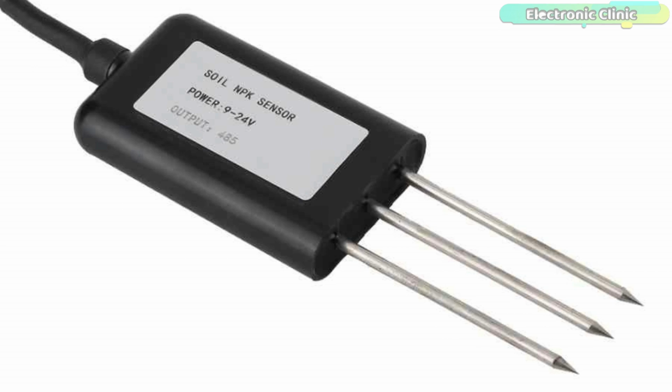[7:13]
The nitrogen, phosphorus and potassium resolution is 1 milligram per kg or 1 milligram per liter. The measuring range of the soil NPK sensor is 0 to 1999 milligrams per kg and the working humidity is from 5 to 95%. The maximum power consumption is less than or equal to 0.15 watt.
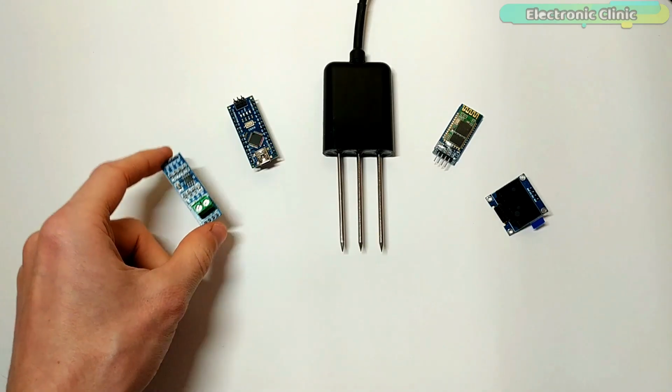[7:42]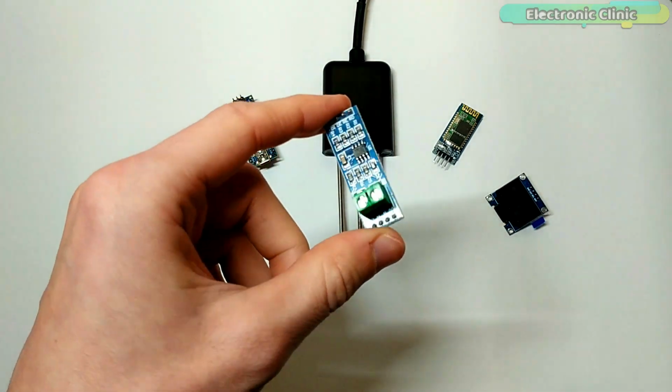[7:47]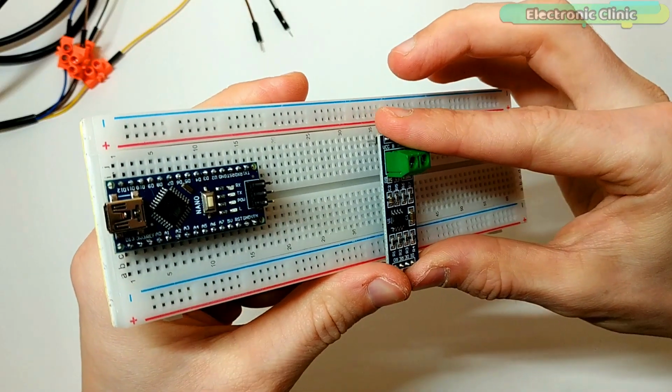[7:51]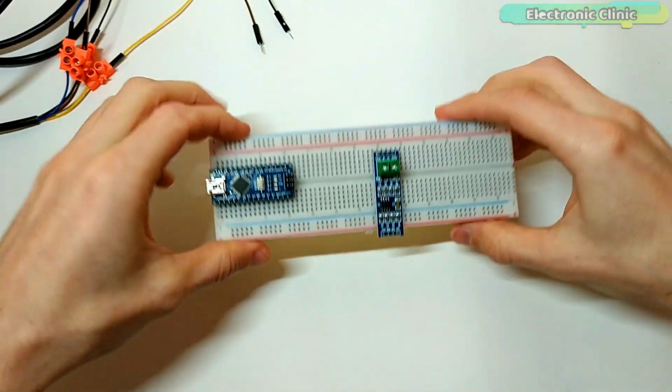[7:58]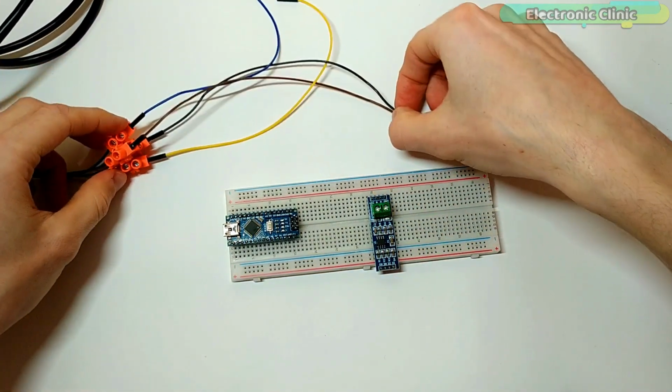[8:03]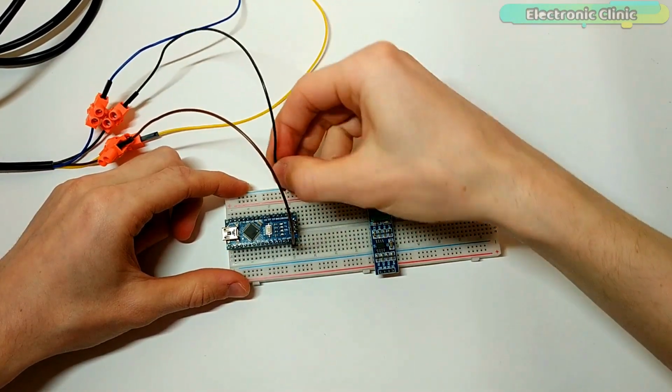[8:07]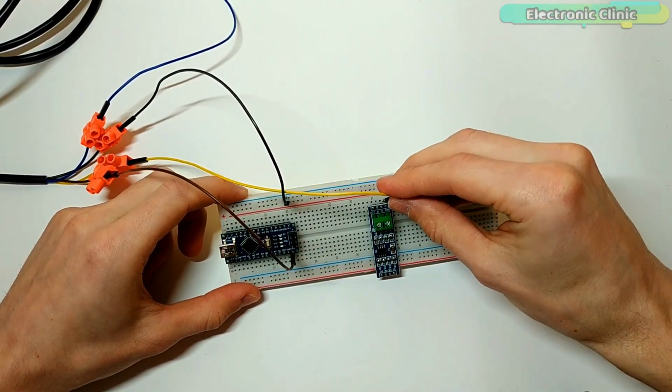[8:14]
This is the MAX485 TTL to RS485 interface module, which is used to connect the soil NPK sensor with the Arduino, as this interface module can be easily powered up using the Arduino's 5 volts. The MAX485 interface module is ideal for serial communication over long distances of up to 1200 meters or in electrically noisy environments. This is the reason it is commonly used in industrial environments.
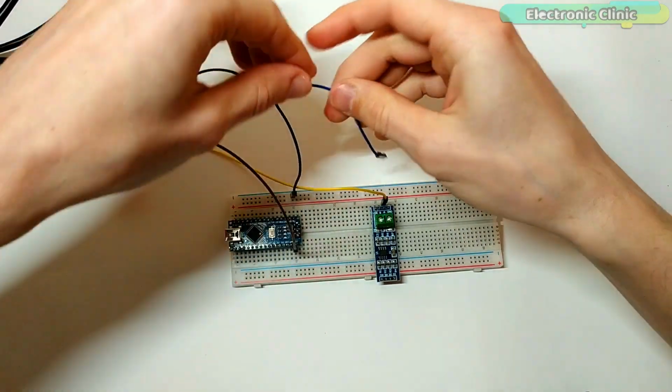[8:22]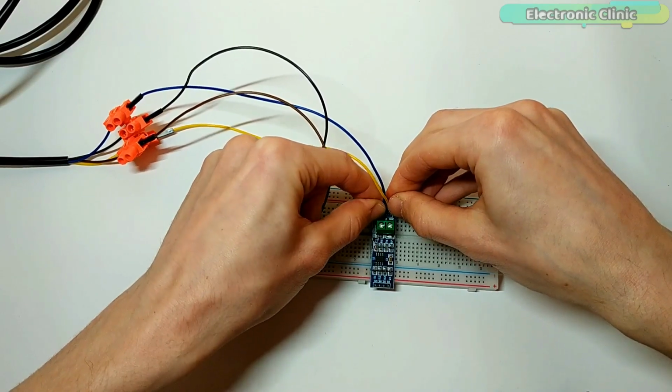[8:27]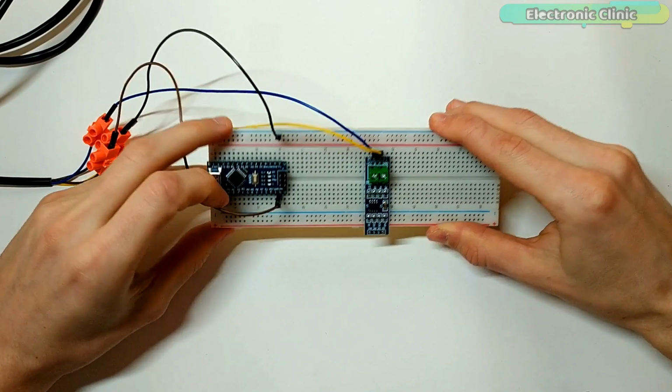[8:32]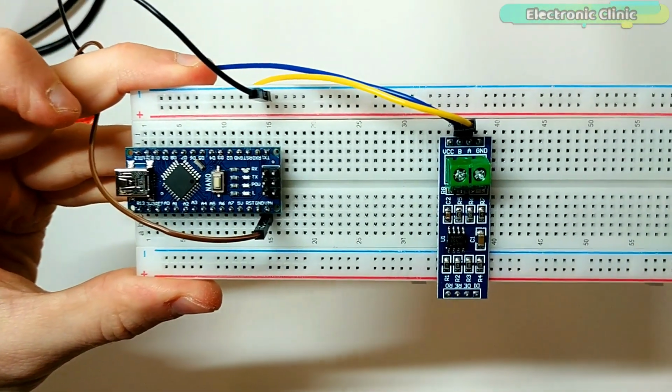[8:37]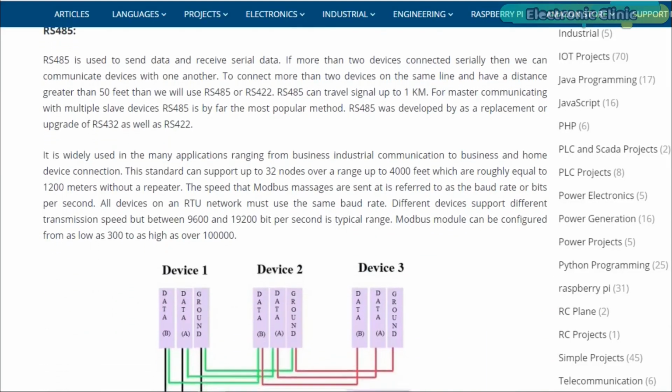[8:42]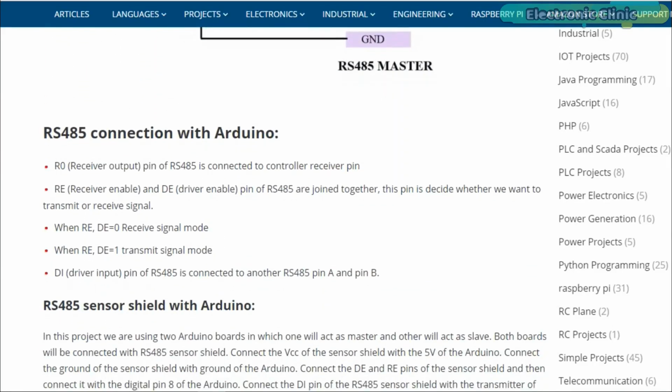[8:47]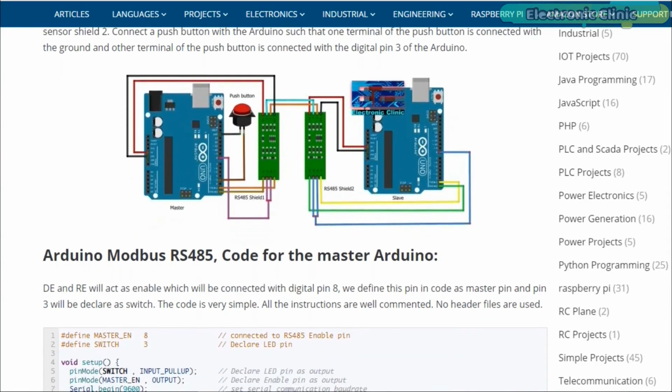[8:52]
It supports up to 2.5 megabit per second data rates, but as the distance increases, the maximum data rate that can be supported comes down. The RS485 has the ability to communicate with multiple devices, up to 32, on the same bus or cable when used in master and slave configuration. I have already written a detailed article on how to use the MAX485 interface module with Arduino and communicate with multiple controllers, so I highly recommend reading this article.
We have 4 male headers on the data side. RO is the receiver output and it should be connected with the RX pin of the Arduino. RE is the receiver enable. This is active low. This pin should be connected with the Arduino's digital output pin. Drive low to enable receiver, high to enable driver. DE is the driver enable pin. This is active high and is typically jumpered to the RE pin. DI is the driver input and it should be connected with the TX pin of the Arduino.
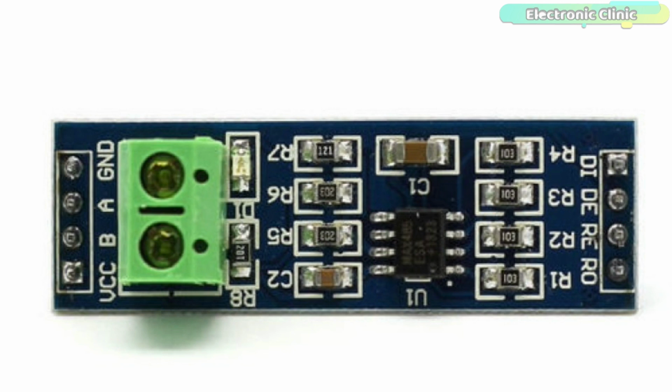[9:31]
Similarly, we have 4 male headers on the output side. VCC pin should be connected with the Arduino's 5 volts. B and A pins should be connected with the B and A pins on the far end module. In our case, we will connect these with the B and A wires of the soil NPK sensor. Ground pin should be connected with the Arduino's ground.
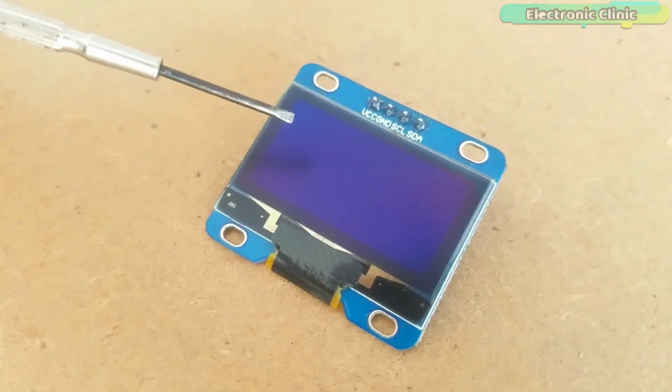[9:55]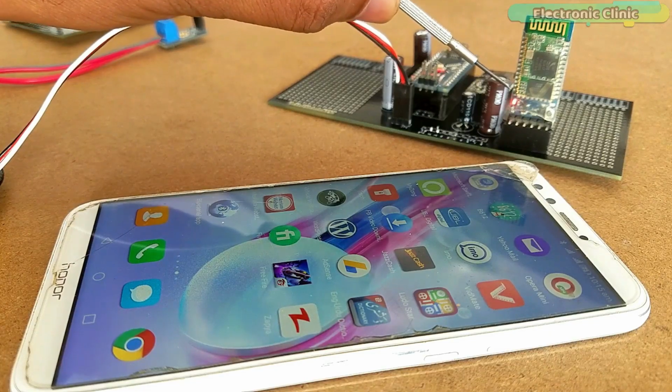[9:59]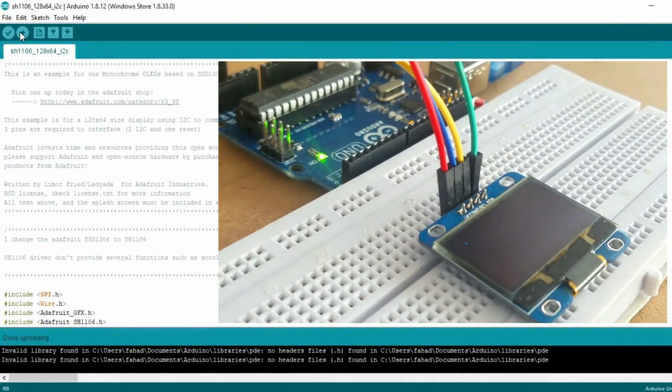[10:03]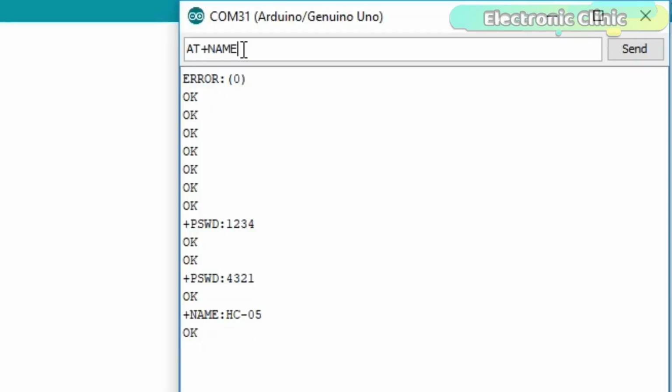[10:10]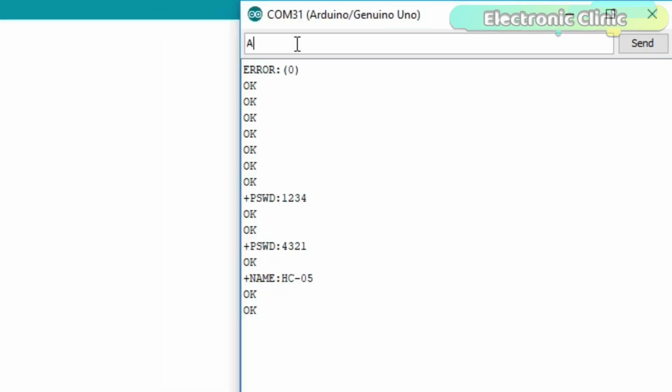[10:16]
If you have never used the I2C supported OLED display module and the HC05 or HC06 Bluetooth module, then I highly recommend watching my getting started tutorials in which I have explained all the basics including technical specifications, interfacing and Arduino programming. I will provide links in the description. Now let's take a look at the circuit diagram.
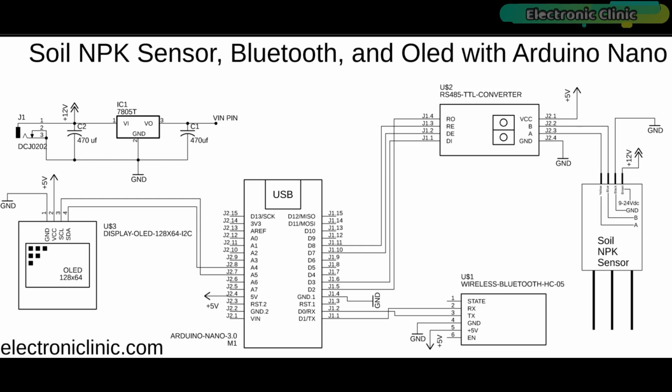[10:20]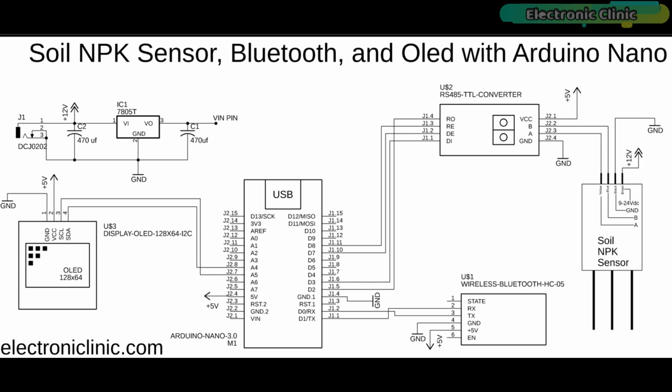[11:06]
The HC05 Bluetooth module RX and TX pins are connected with the Arduino's TX and RX pins, and the power supply pins are connected with the Arduino's 5 volt and ground. The SSD1306 I2C supported OLED display module SDA and SCL pins are connected with the A4 and A5 pins, while the VCC and ground pins are connected with the 5 volt and ground pins of the Arduino Nano board.
As we are planning to power up the Arduino board using a 12 volt power supply, we will need to step down this voltage to 5 volts. So by using the 7805 voltage regulator, we can get regulated 5 volts. You can also see two decoupling capacitors are connected at the input and output sides of the voltage regulator. Now to power up the Arduino Nano, all you need is simply connect the output pin of the voltage regulator with the VIN pin of the Arduino Nano.
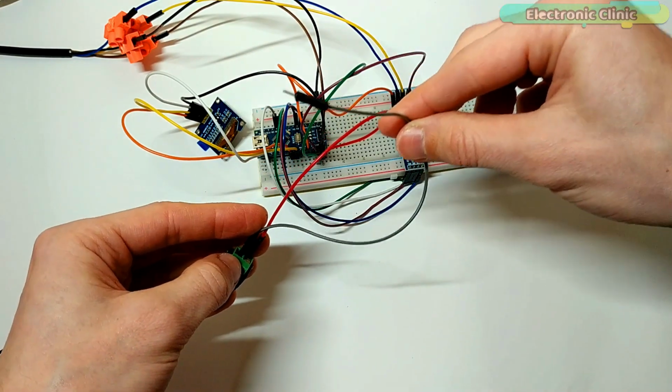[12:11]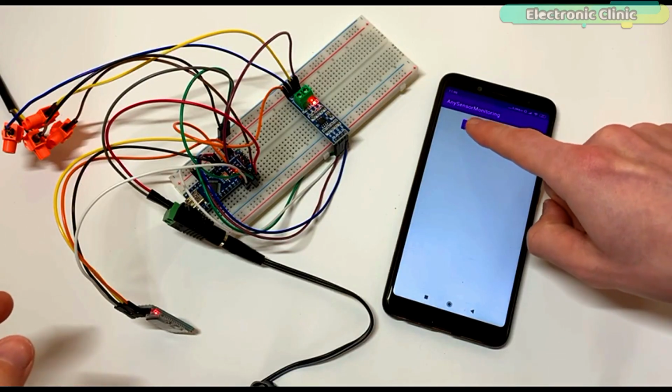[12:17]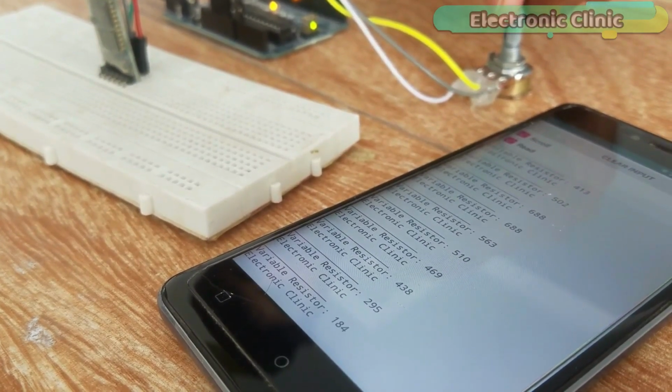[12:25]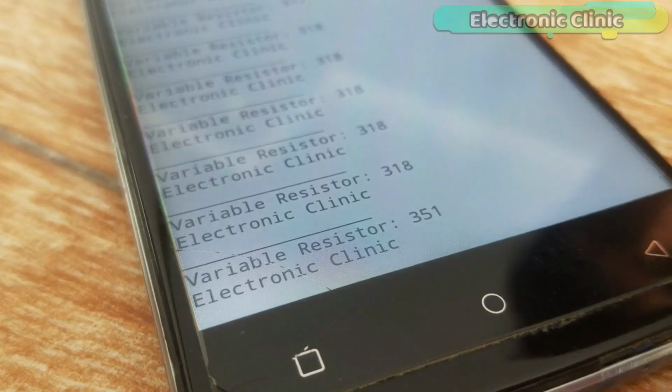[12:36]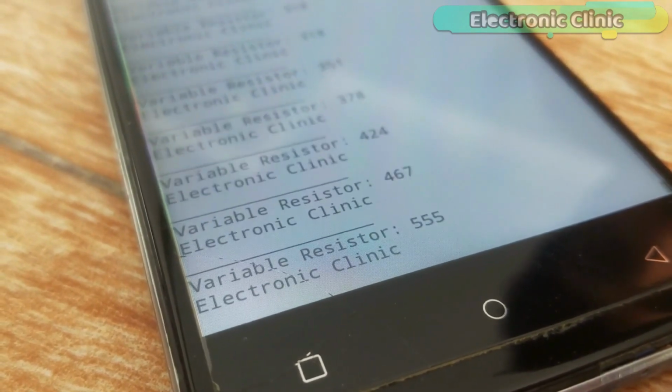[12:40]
Next, we started off by interfacing all the components as per the circuit diagram already explained. The Android cell phone application used for monitoring the soil NPK sensor is designed in Android Studio. This is the same application I designed in my previous video, so I highly recommend watching this tutorial in case you want to design your own Android cell phone application for monitoring different types of sensors, or else you can download the APK file.
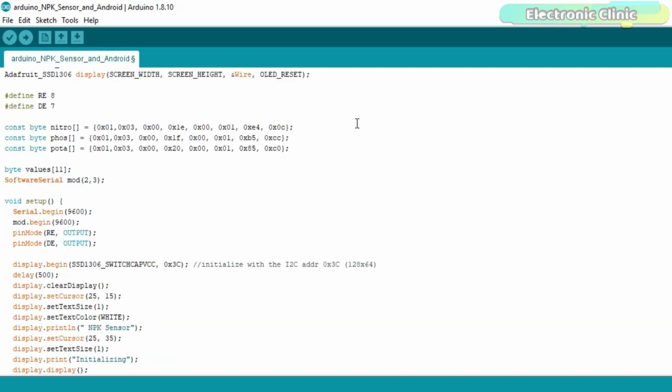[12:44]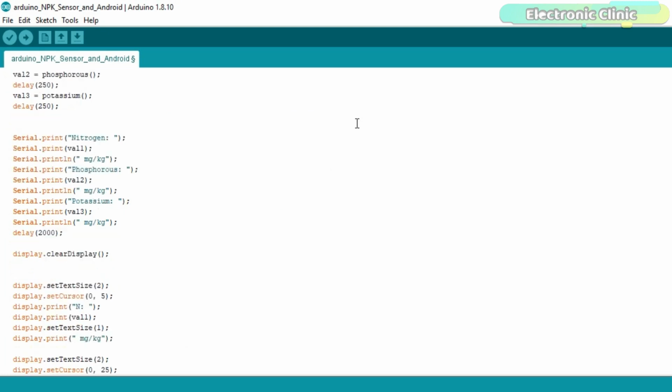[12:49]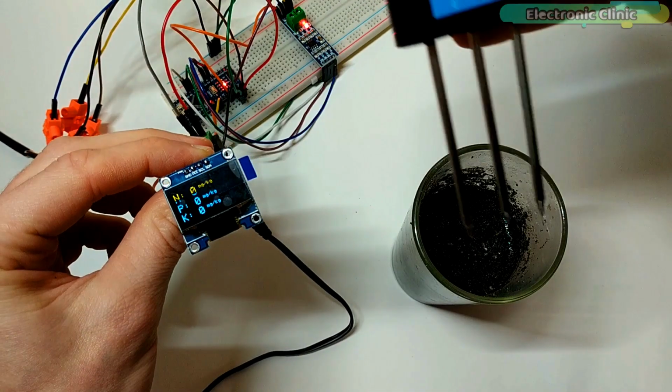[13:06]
The purpose of this program is to read data from the soil NPK sensor and then display the values on the OLED display module and also send the data to the Android cell phone application. For detailed explanation, read my article available on electronicclinic.com. I will provide a link in the description. We have already uploaded this program. Let's watch this project in action.
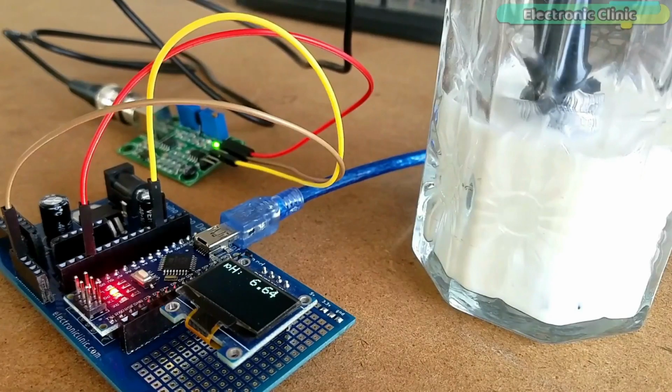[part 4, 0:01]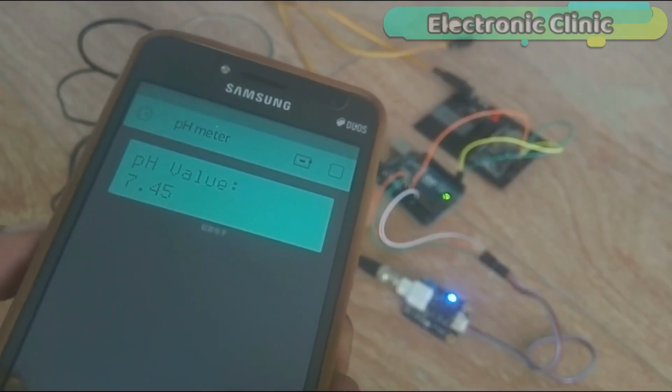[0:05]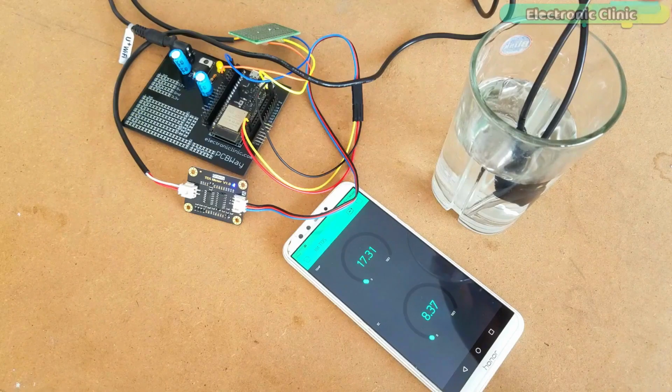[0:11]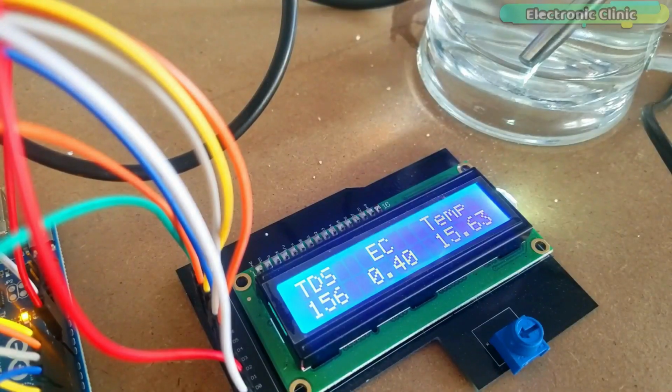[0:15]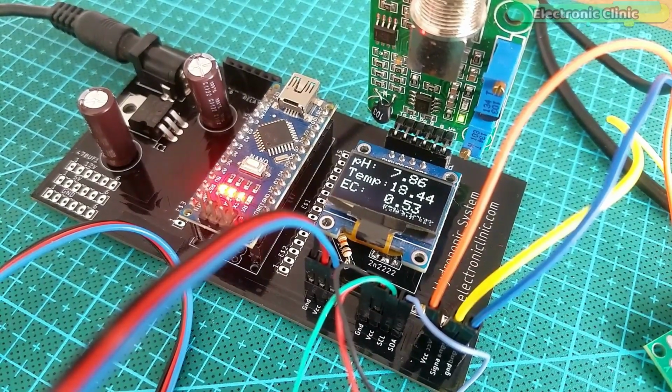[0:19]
I have been using a pH sensor with Arduino and NodeMCU ESP8266 for measuring the pH value of different liquids. I also used it with the EC sensor or TDS sensor for measuring water quality, and I also used it in the making of a low-cost hydroponics system, which was an Arduino-based project.
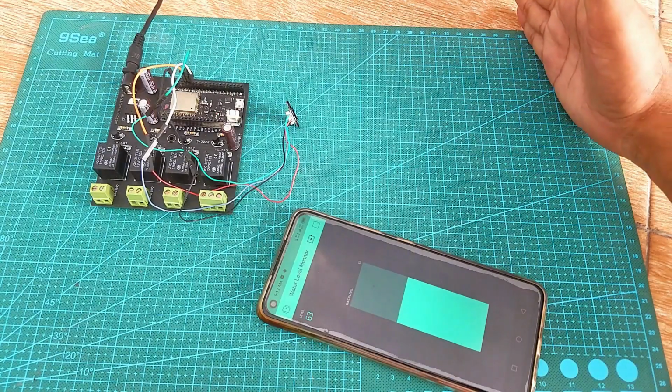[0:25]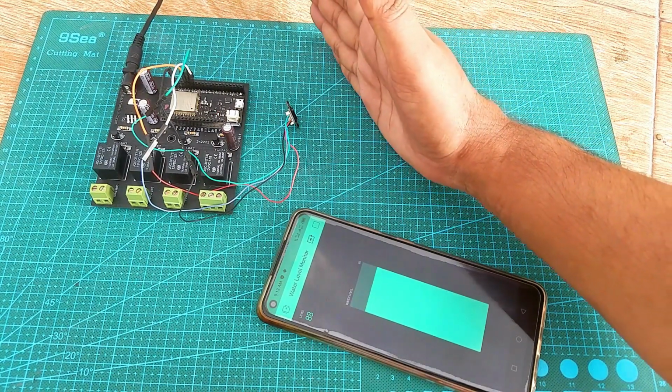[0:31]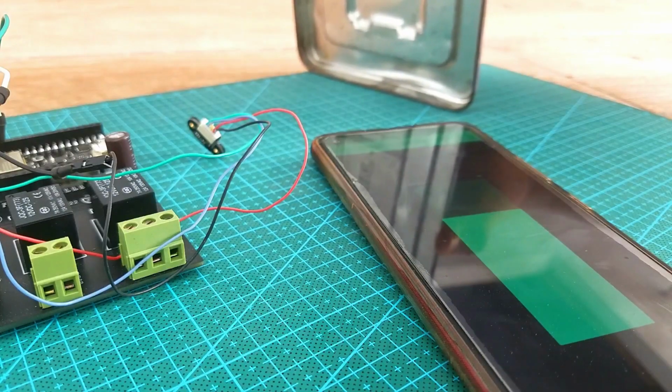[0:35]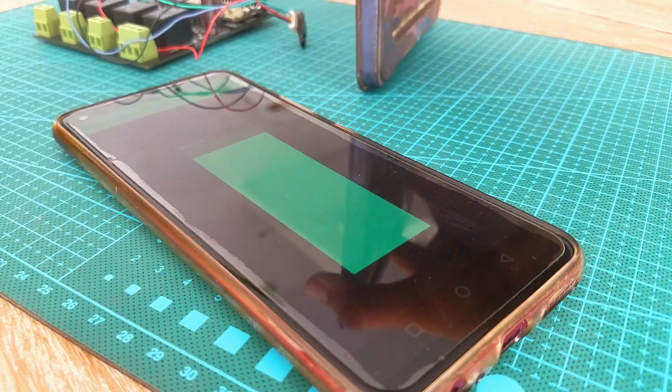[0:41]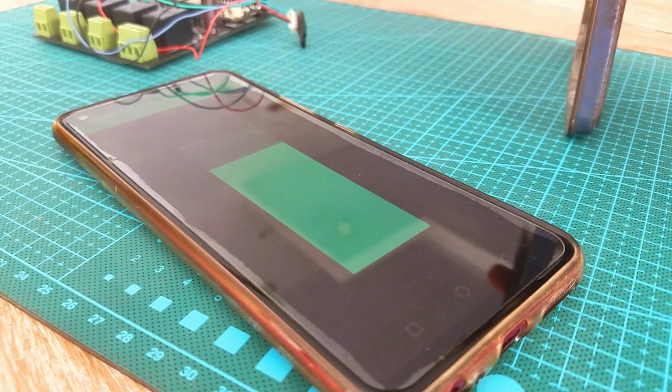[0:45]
As explained in my previous video, which is based on the water level monitoring system using the DFRobot URM10120 laser range finder or distance sensor, I'm making this series of videos to explain how to use each sensor individually before I make the complete IoT based hydroponics system.
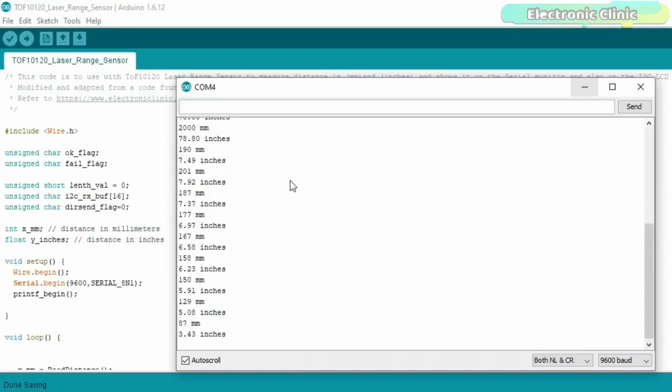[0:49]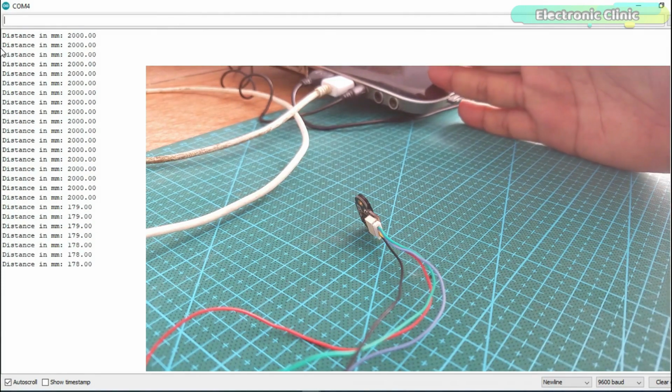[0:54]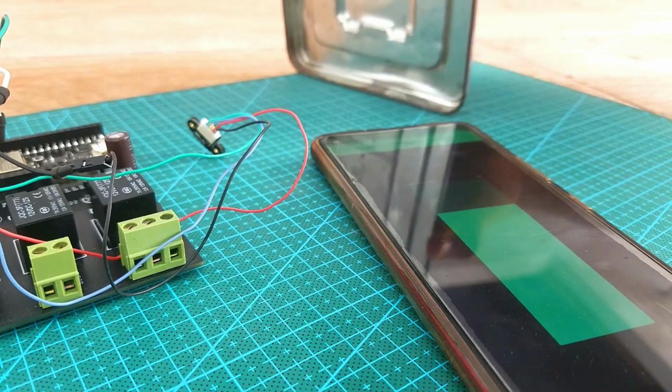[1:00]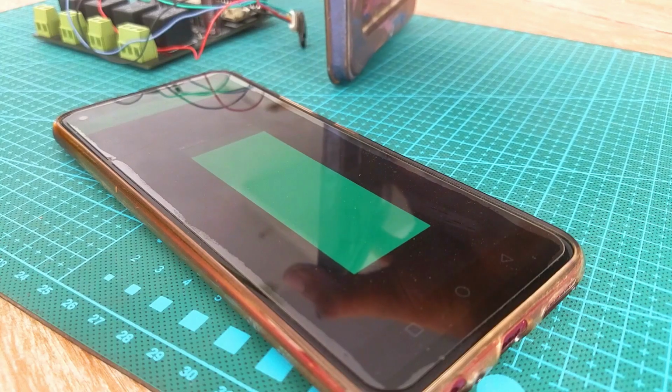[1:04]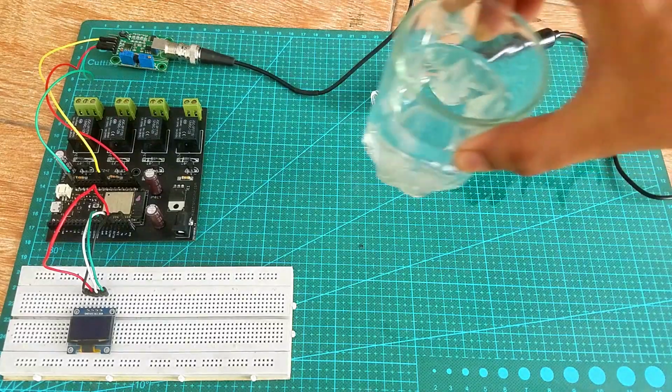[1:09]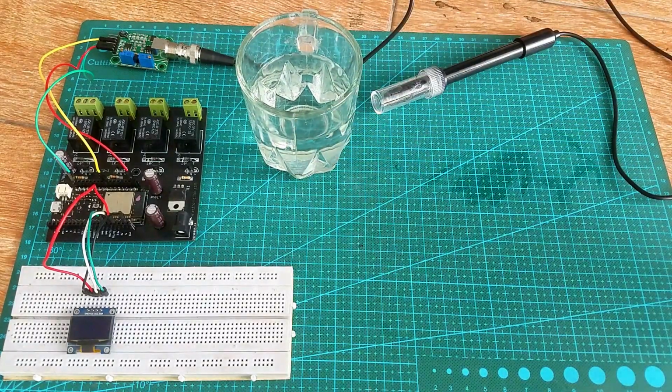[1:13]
So in this series of videos, my first video was based on the IoT water level monitoring system using ESP32, the distance sensor, and the Blynk application. In that video, I explained each and every detail, including interfacing, programming, and how to get rid of the fluctuations.
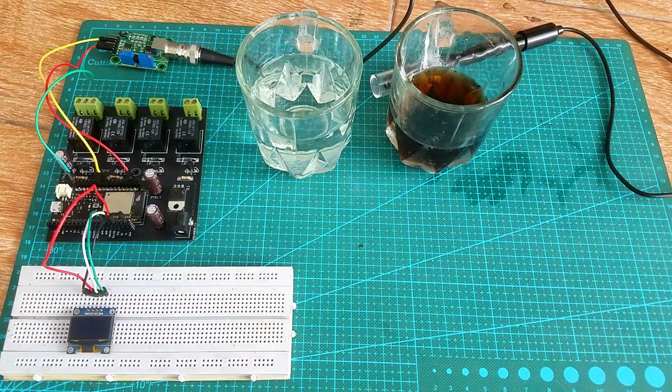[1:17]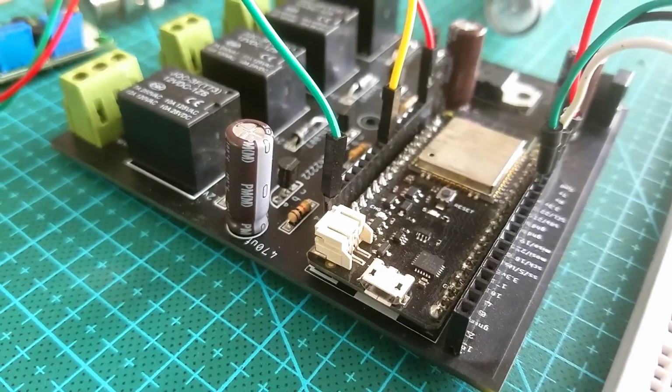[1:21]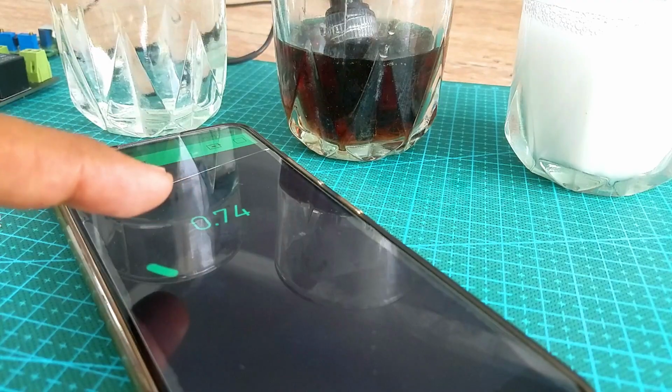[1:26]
In today's episode, which is the second video in this series, I'm going to explain how to make an IoT pH sensor using the pH sensor kit from DIYMore, an ESP32 Wi-Fi plus Bluetooth module, an OLED display module, and the Blynk application.
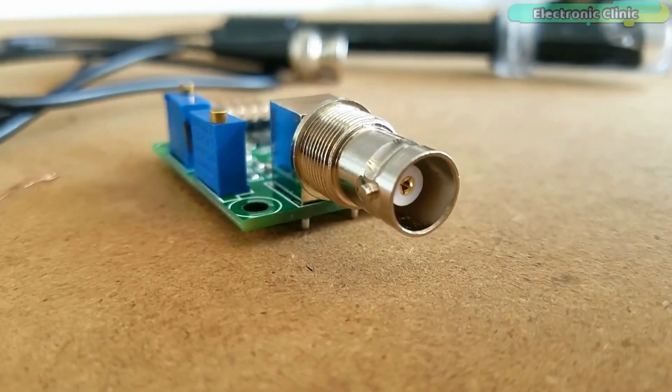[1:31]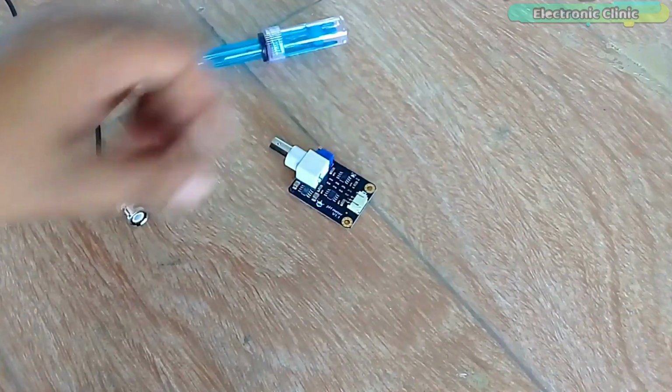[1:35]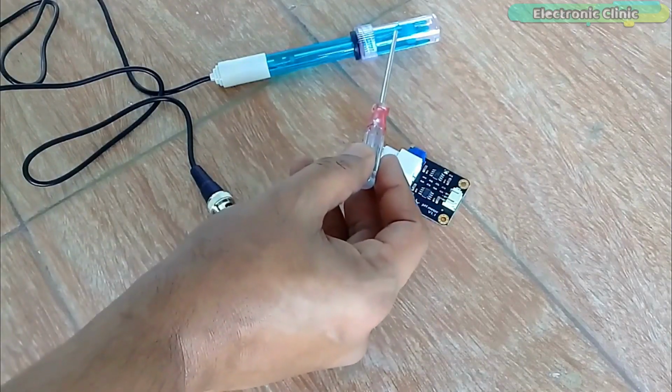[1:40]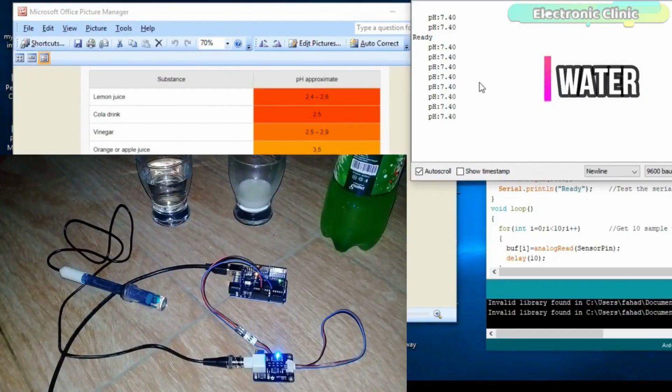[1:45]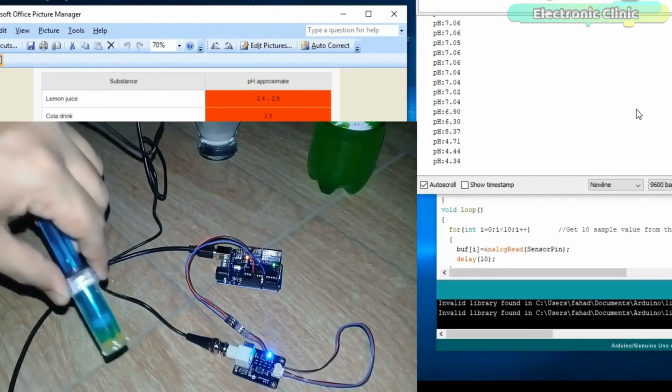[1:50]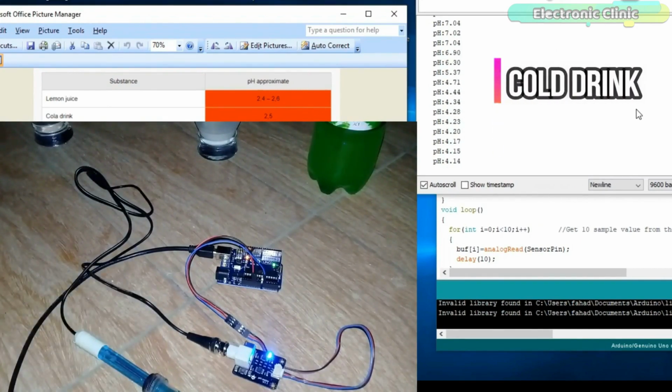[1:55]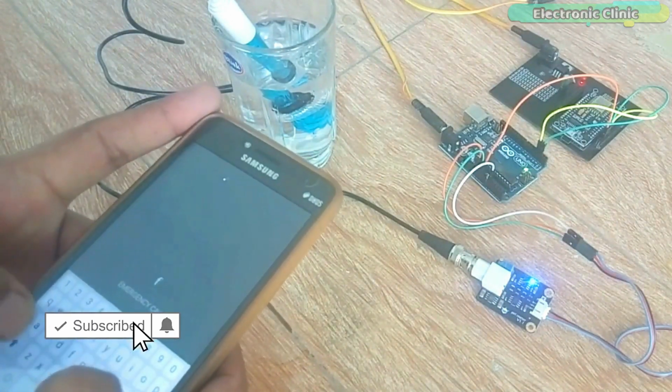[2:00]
The pH sensor kit from DIYMore is a bit different from the one designed by DFRobot, which I have also used in some of my previous videos explaining what a pH sensor is, its working, calibration, and how to use a pH sensor to find the pH value of different liquids. I also used the DFRobot pH sensor kit for measuring the water quality using the Arduino board, and in an IoT based water quality monitoring system using the NodeMCU ESP8266 Wi-Fi module.
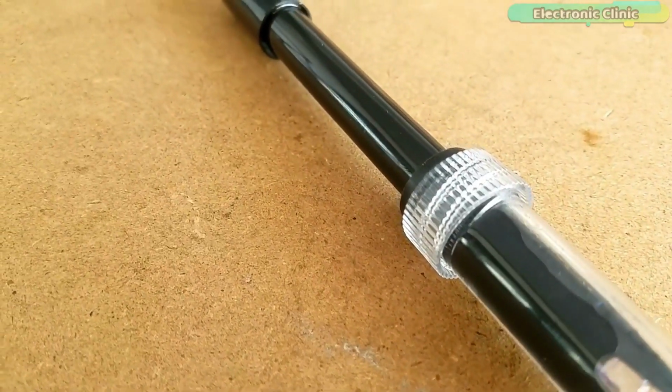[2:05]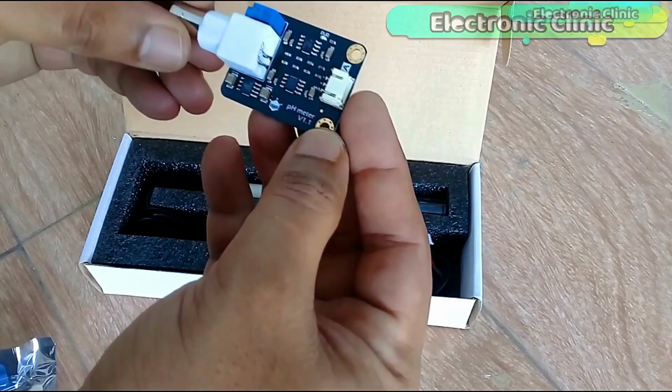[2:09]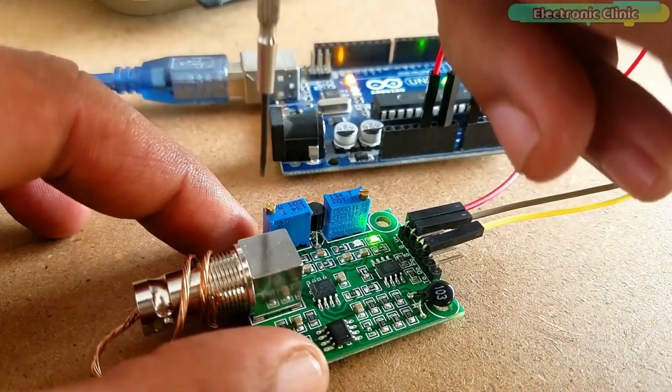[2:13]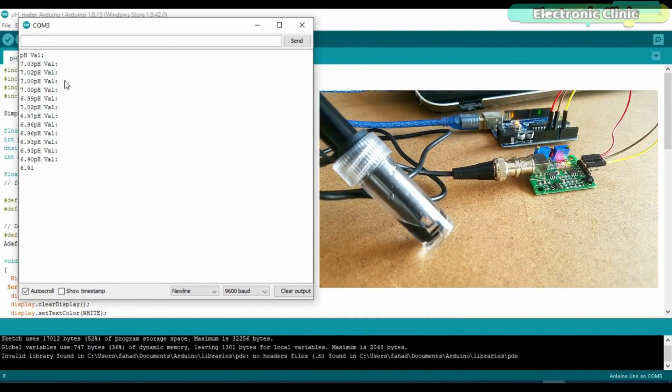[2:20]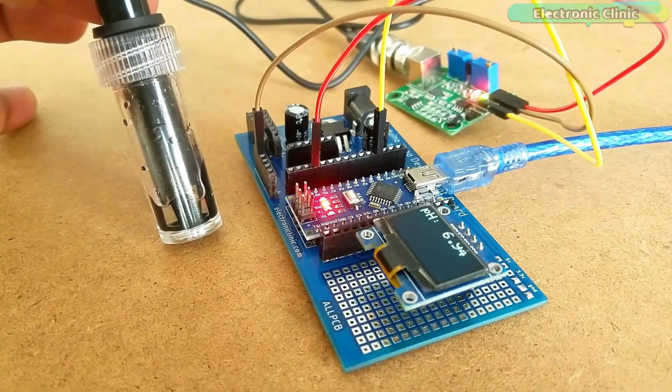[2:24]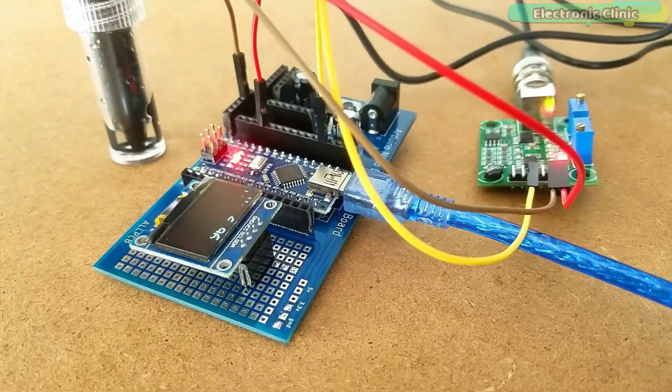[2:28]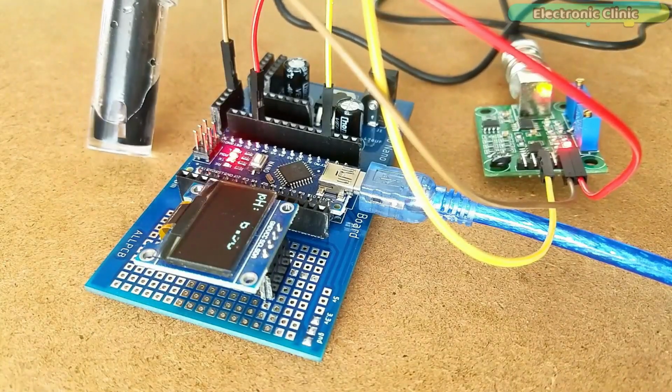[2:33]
The DIYMore pH sensor kit is cheap as compared to the DFRobot pH sensor kit. I have already explained how to calibrate and use this low cost pH sensor kit with the Arduino to measure the pH value of different liquids. So I highly recommend you first watch my previous video and then resume from here, because I will use the same code, but I will make some modifications to make it compatible with the ESP32 Wi-Fi plus Bluetooth module.
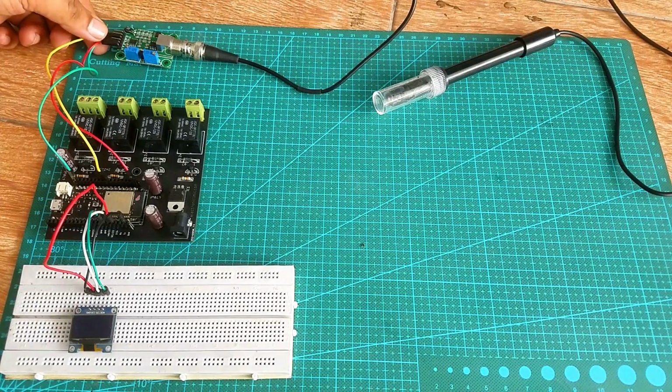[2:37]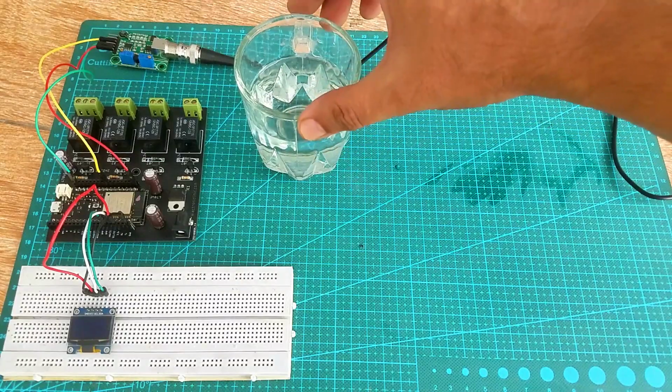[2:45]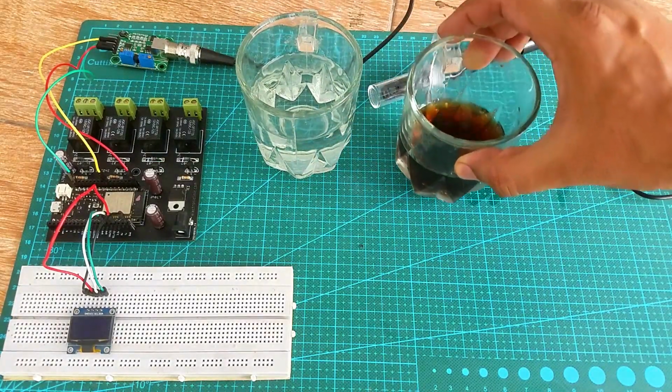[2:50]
Anyways, after modifying the code and interfacing the pH sensor and OLED display module with the ESP32 development board, finally, I was ready to test the pH value of different liquids, including water, acetic solution, and washing powder.
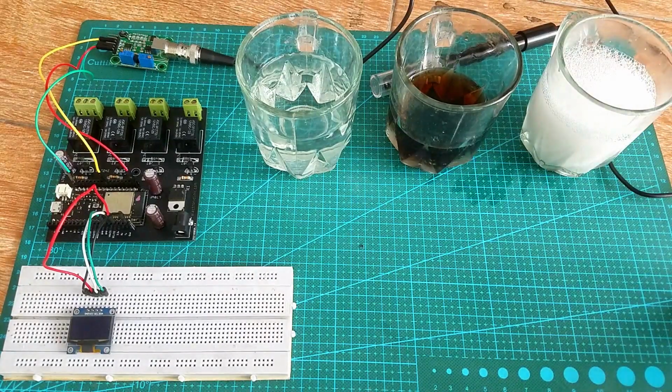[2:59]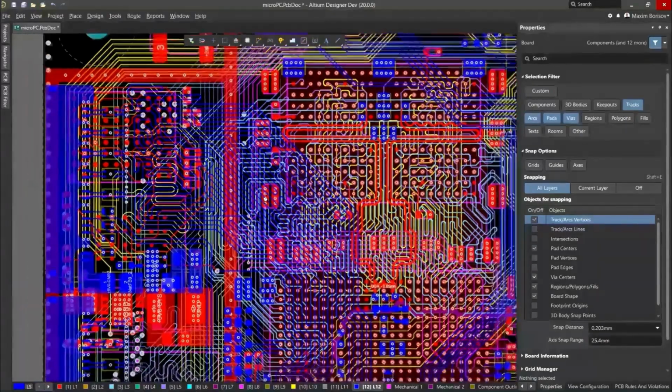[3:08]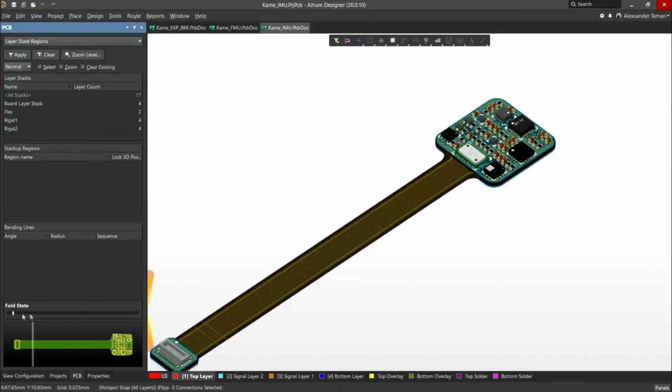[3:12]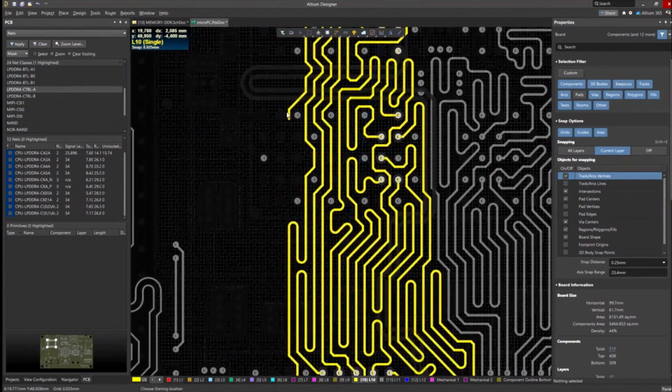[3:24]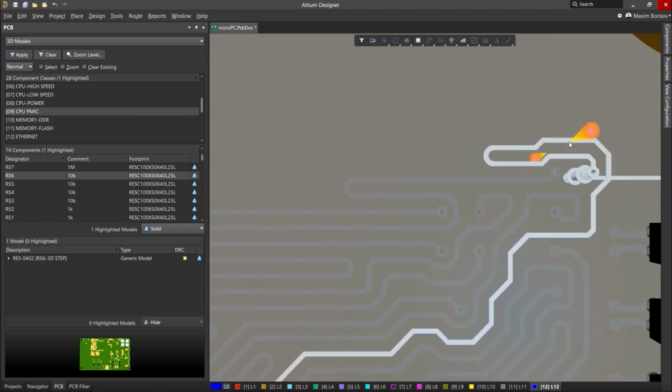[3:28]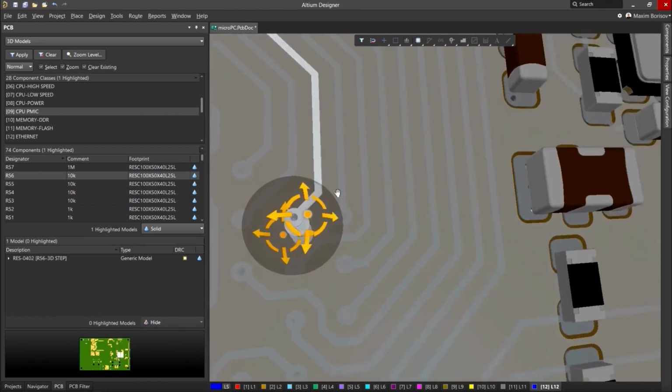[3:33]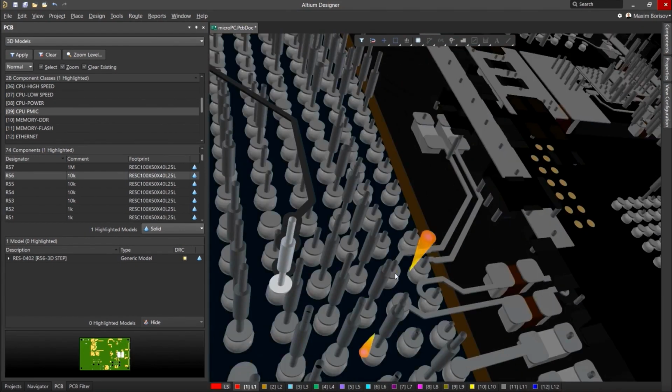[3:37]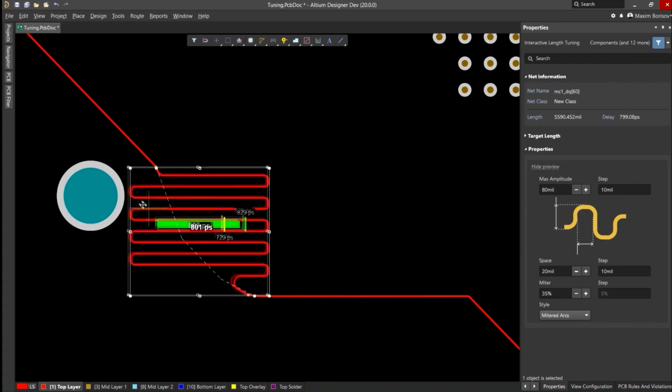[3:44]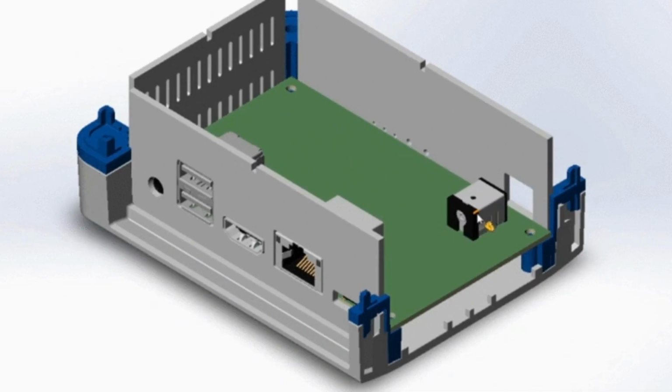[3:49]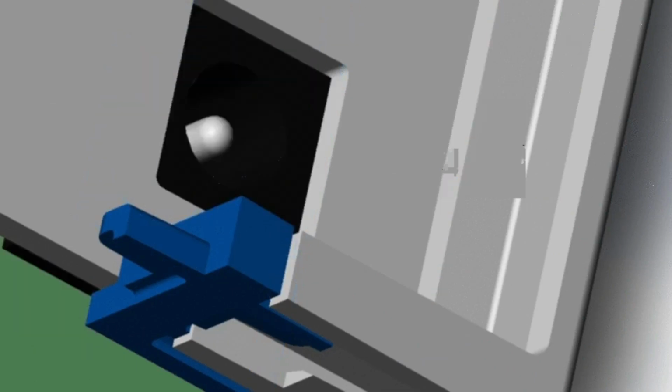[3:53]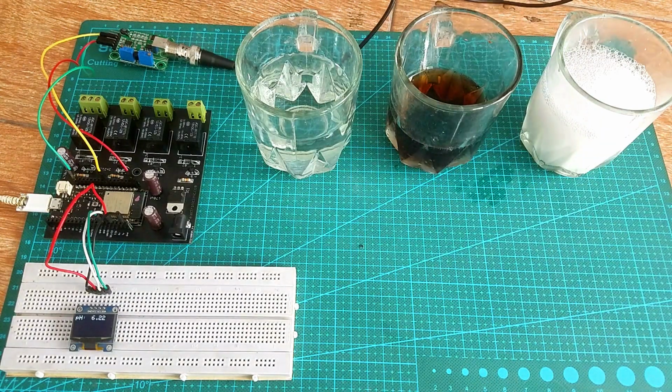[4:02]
I have already calibrated my pH sensor kit the same way as I explained in my previous video tutorial. Initially, I started with the water. I waited for a few minutes to let the pH sensor stabilize. The water pH value, which you can see on the OLED display module, is simply amazing.
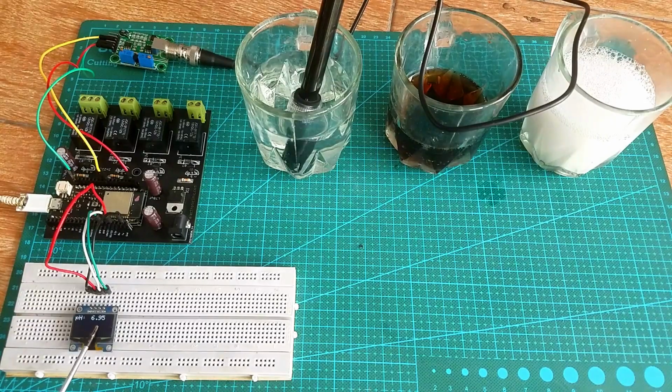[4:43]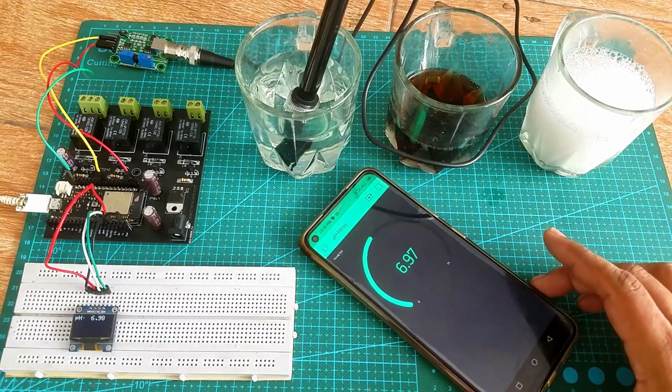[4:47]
You know, the pH of most drinking water lies within the range of 6.5 and 8.5. Natural waters can be of lower pH. The water under test is from a well and the value fluctuates around 7, which means this water is drinkable. I'm pretty satisfied with the result. The same value you can also see on the Blynk application.
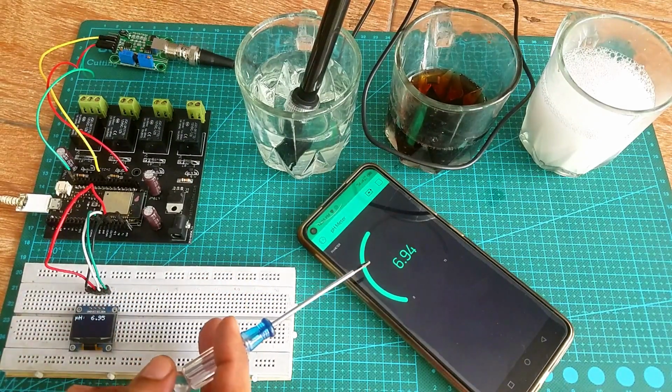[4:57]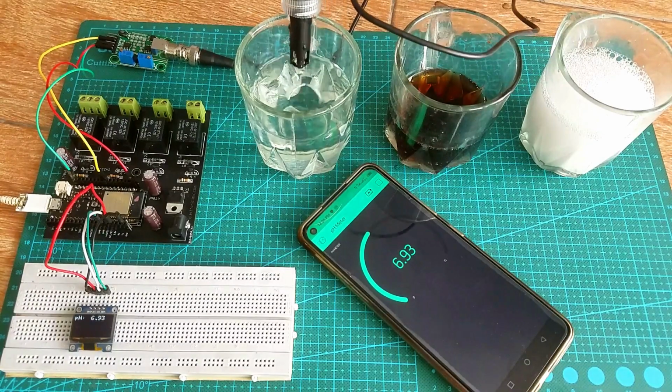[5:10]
So no matter where you are, if you have access to the internet, then you can monitor the pH value of any liquid from anywhere in the world. See how easy it is to make an IoT pH sensor using just a few low-cost electronics components. Anyways, next I'm going to check the pH value of this acidic solution.
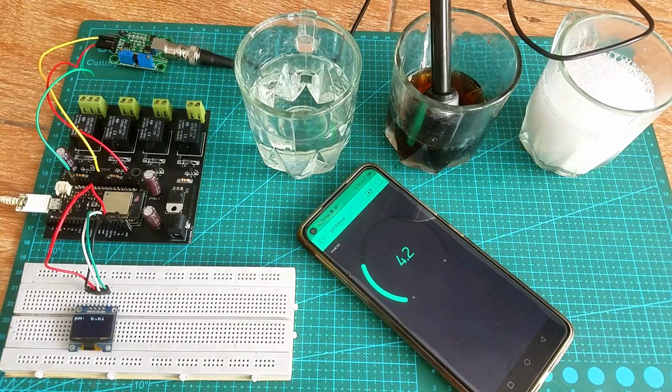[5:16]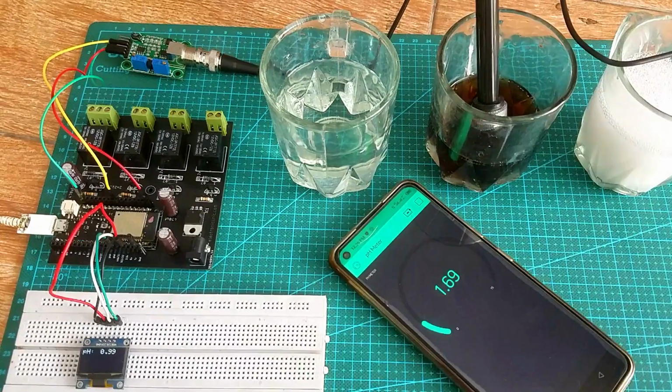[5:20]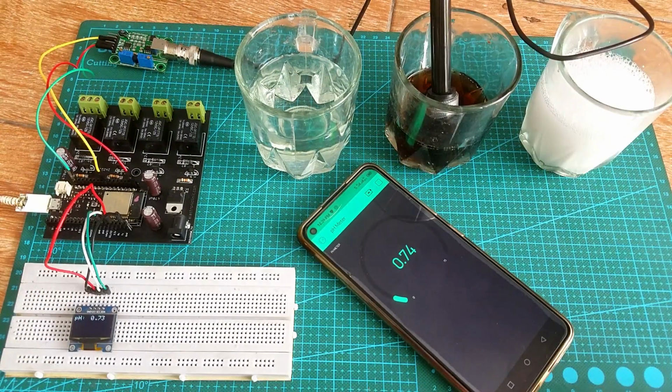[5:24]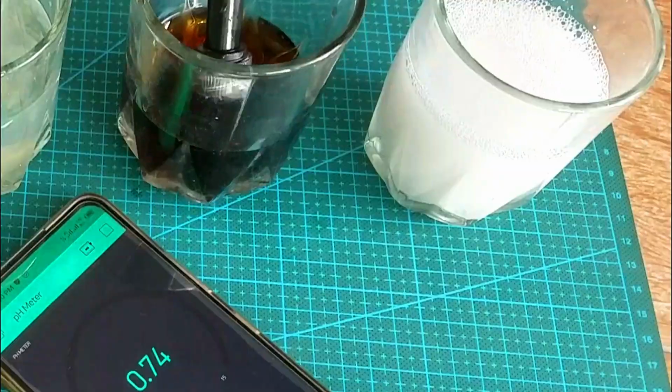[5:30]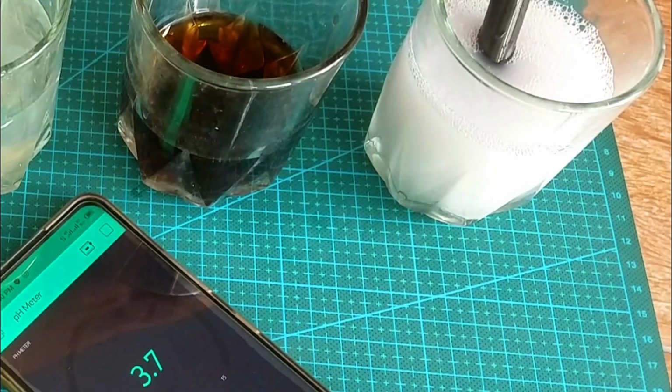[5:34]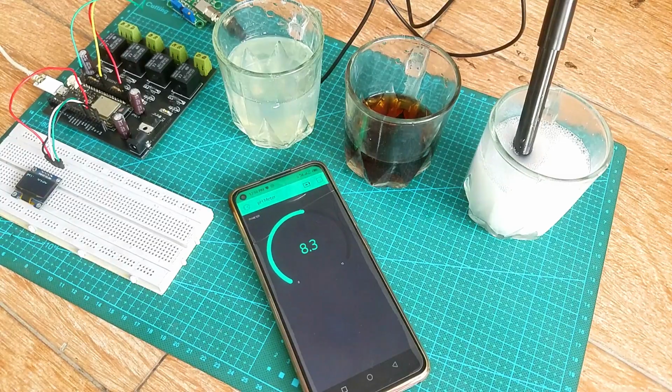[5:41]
This is amazing. The pH sensor is working just fine. A lower pH value means the solution is very acidic. Next, I'm going to test the pH value of washing powder. You know, mostly the powder detergent's pH value is close to 10. You may get a slightly lower or a higher value depending on the chemicals used.
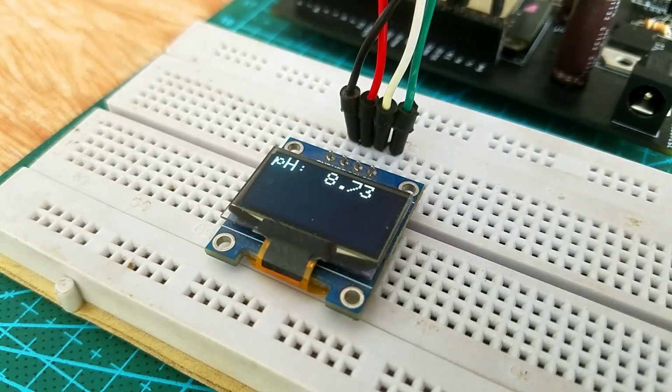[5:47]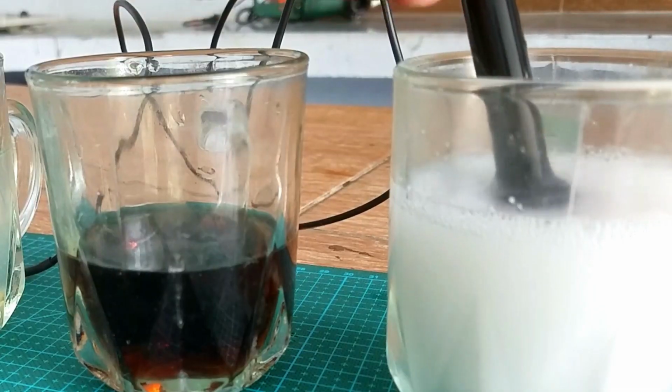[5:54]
I shared the test results with you guys and now you have got the idea of what you are going to learn after watching this video. Without any further delay, let's get started.
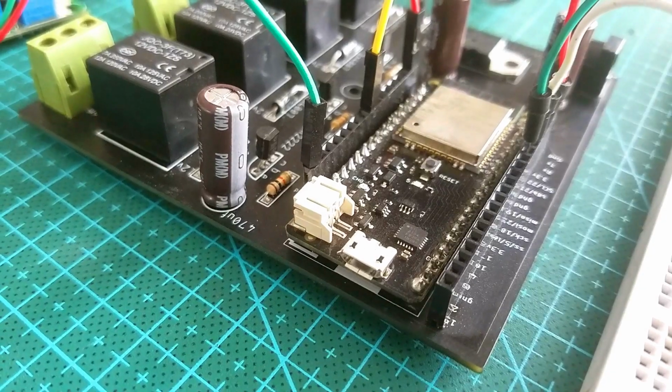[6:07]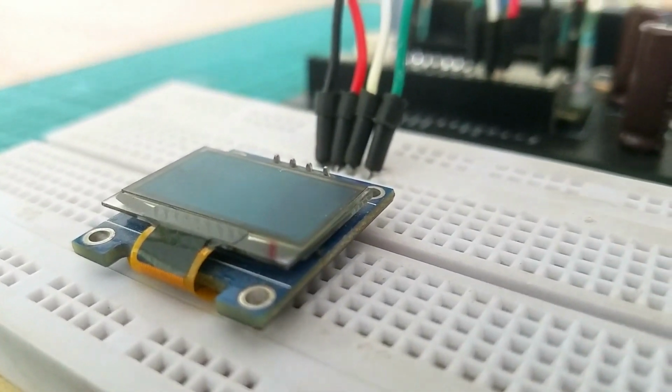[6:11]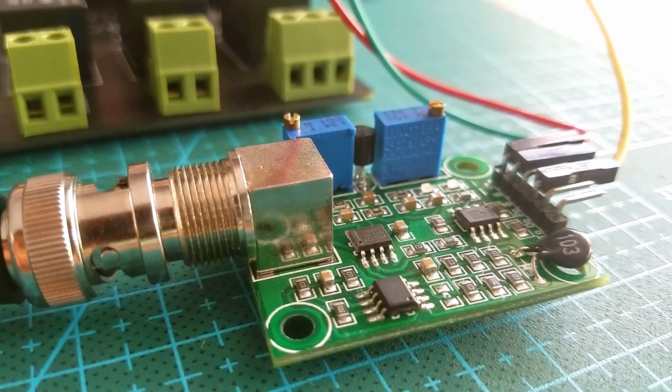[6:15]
On the top left side, you can see a regulated 5-volt power supply which is used to supply 5 volts to the ESP32 module. If you want to use an external power source, then you will need this power supply and you will need to connect a wire from the output of the 7805 regulator to the 5-volt pin of the ESP32 Wi-Fi plus Bluetooth module.
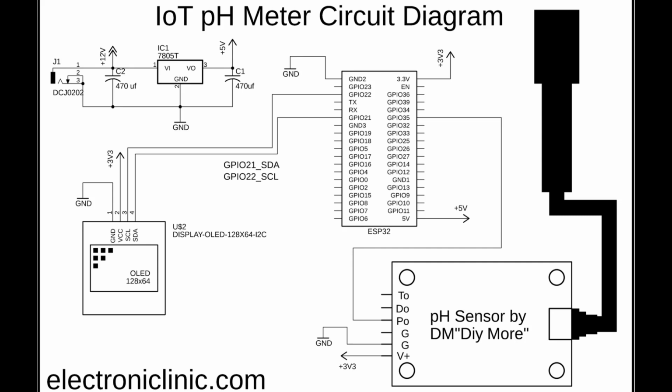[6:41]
The main advantage of using this regulated 5-volt power supply is that you can power up your ESP32 module using a 12-volt adapter or a solar panel. But if you are performing basic experiments, then you can use your laptop or computer to power up the ESP32 module.
The OLED display module power supply pins are connected with the 3.3-volt and ground pins, while the SDA and SCL pins are connected with GPIO pins 21 and 22. The pH sensor kit V+ and ground pins are connected with the 3.3-volt and ground, while the PO pin is connected with GPIO pin 35.
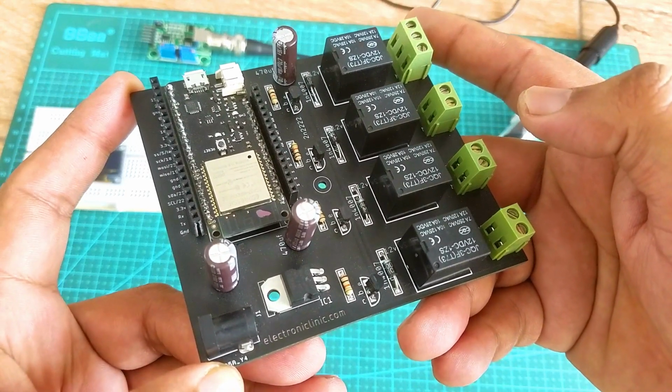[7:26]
This is the same ESP32 development board which I used with the TOF10120 sensor. So I'm going to use the same board with the pH sensor kit and OLED display module. You can see this board also has relays, but for now I'm not using these relays.
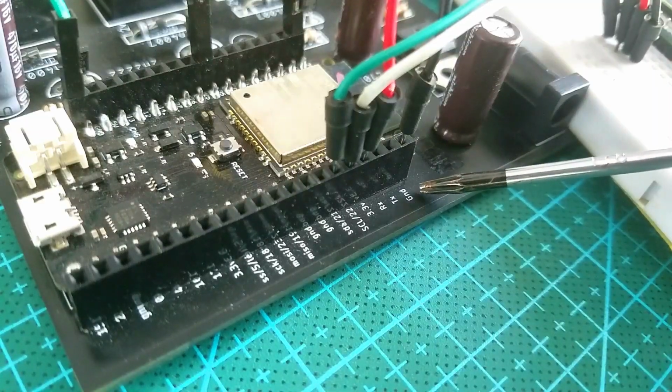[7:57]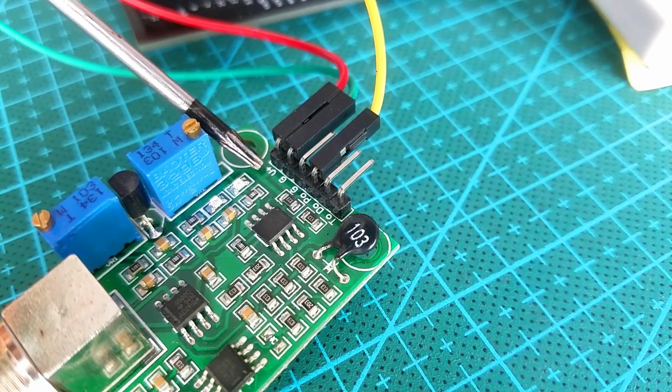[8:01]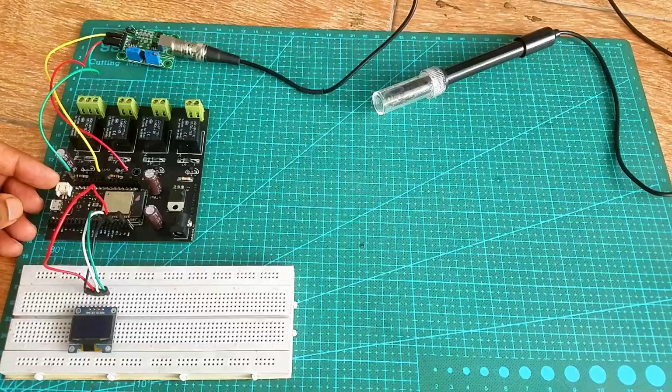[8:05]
Anyways, I connected the OLED display module and the pH sensor kit with the ESP32 as per the circuit diagram which I just explained. So my interfacing is completed and now let's take a look at how to make the Blynk application.
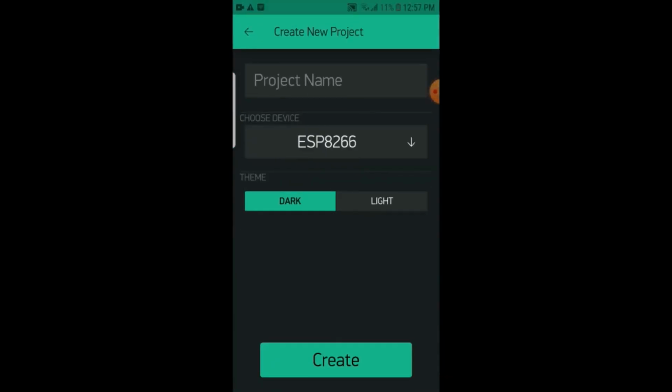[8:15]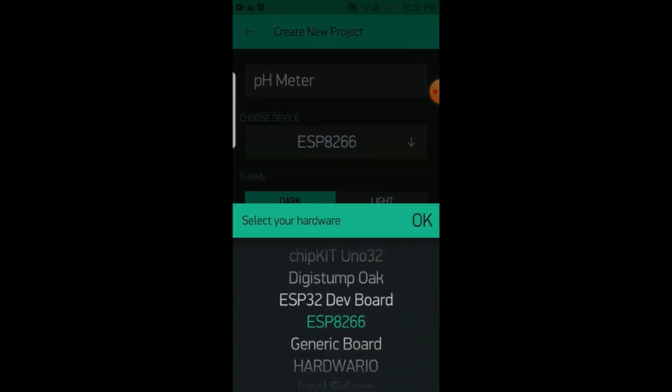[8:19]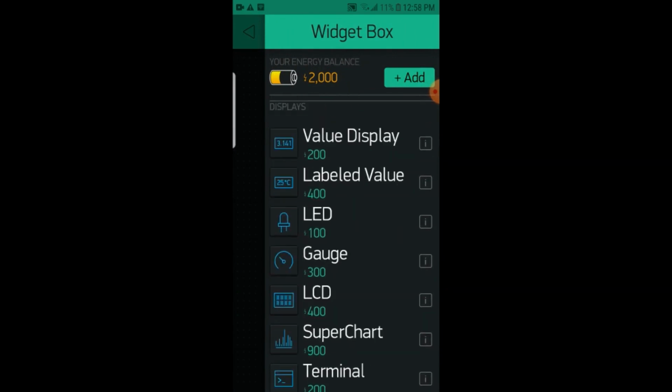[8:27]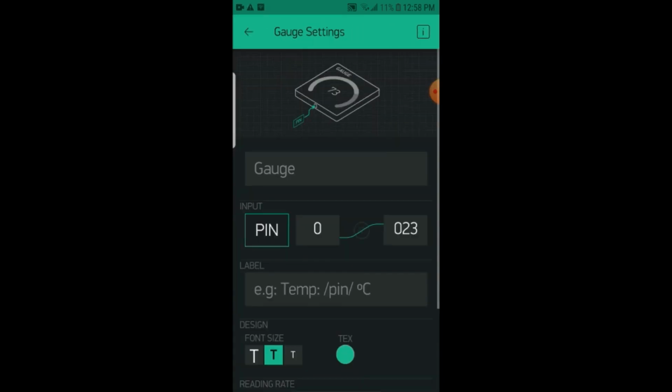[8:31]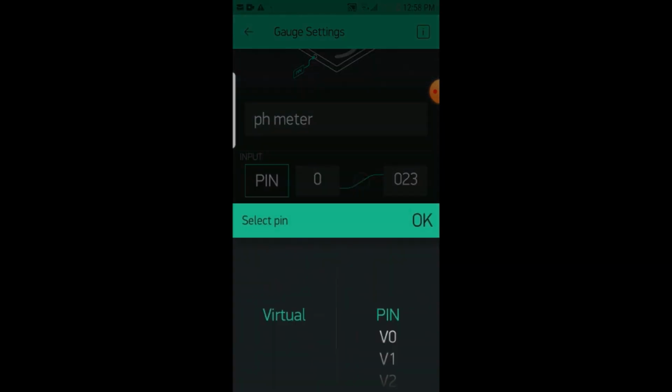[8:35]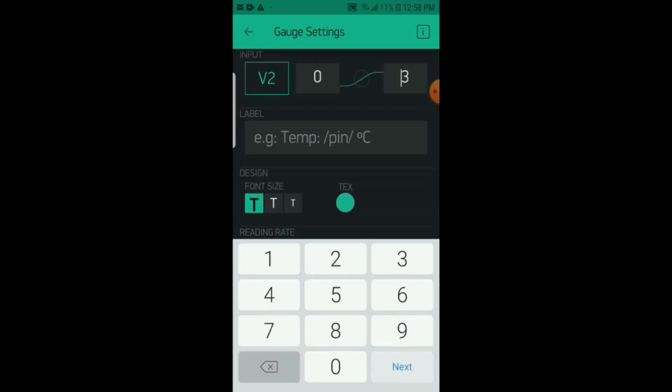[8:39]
The Blynk application is ready and now let's take a look at the IoT ESP32 pH meter programming.
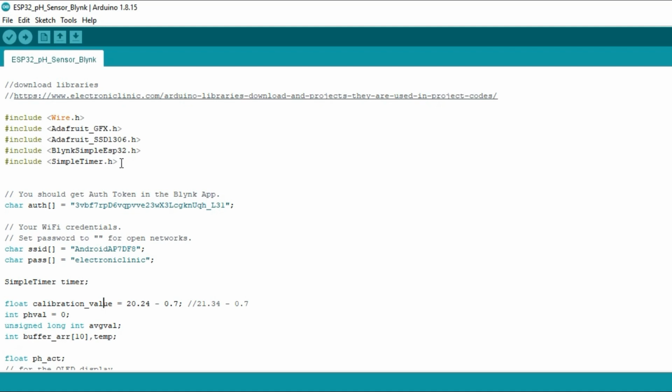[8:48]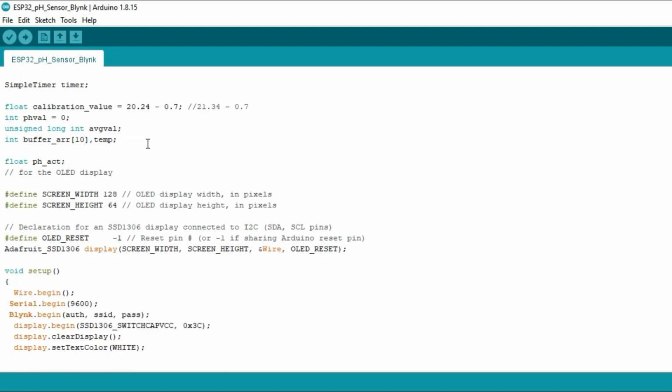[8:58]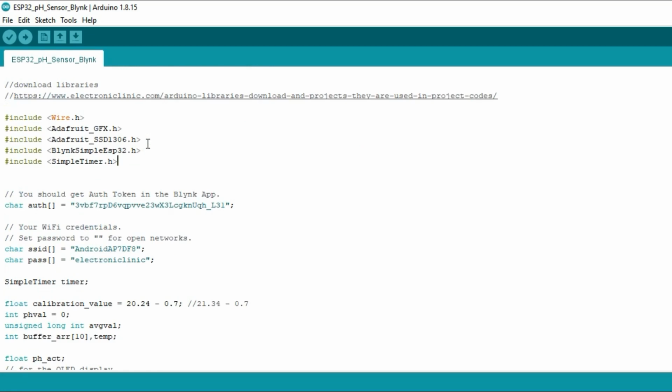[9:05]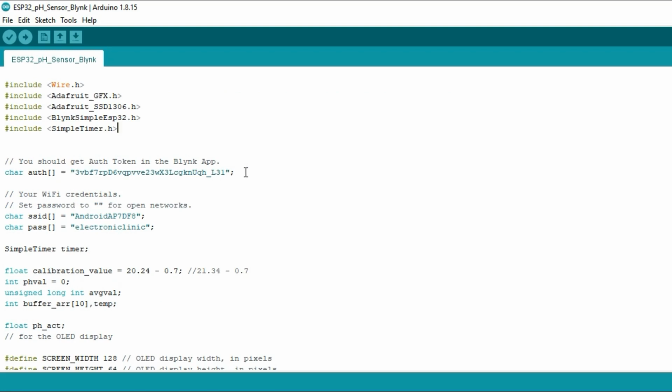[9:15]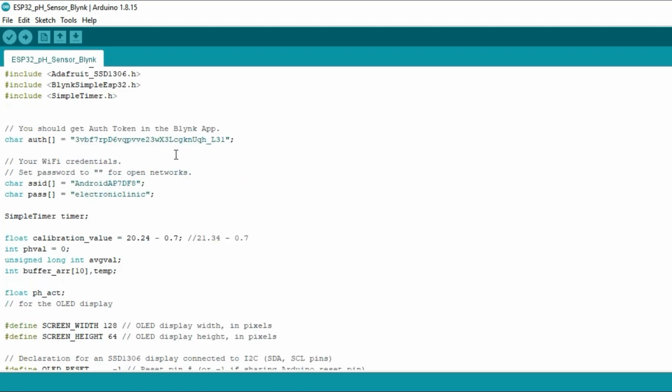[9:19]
This is the same exact code which I used in the getting started tutorial, which was based on the Arduino board. But as this time I'm using the ESP32 board with the pH sensor kit, I made a few changes. You can see I added these libraries. I also added the authentication token which was generated while making the Blynk application, and I also added the Wi-Fi credentials.
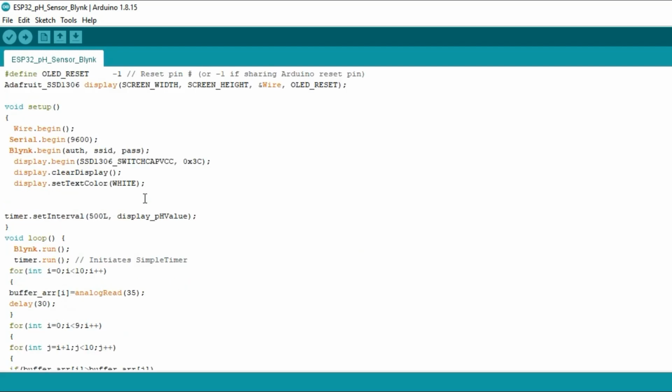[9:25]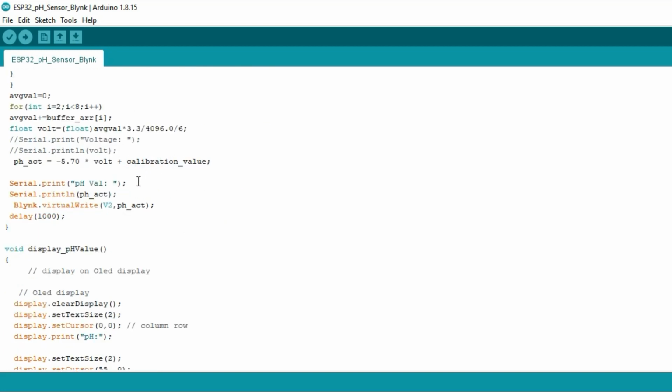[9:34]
Another important change is the voltage and the ADC resolution, and finally to send the value to the Blynk application, I added this line of code, and you can see I'm using the same V2 virtual pin and the final pH value. Everything else remains exactly the same.
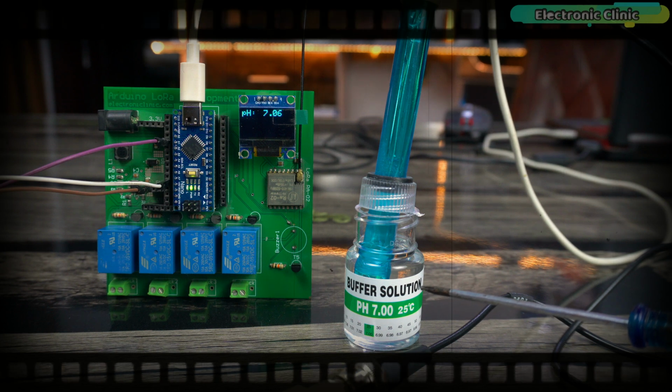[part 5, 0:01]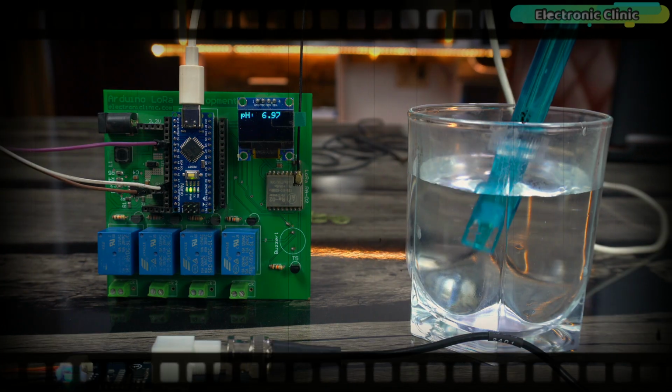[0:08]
The pH probe has been perfectly calibrated because it has detected the pH 7 buffer solution with a high level of accuracy. Now we are going to measure the pH value of these different liquids.
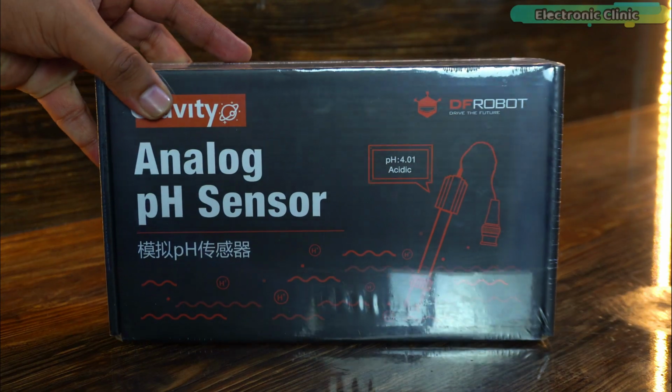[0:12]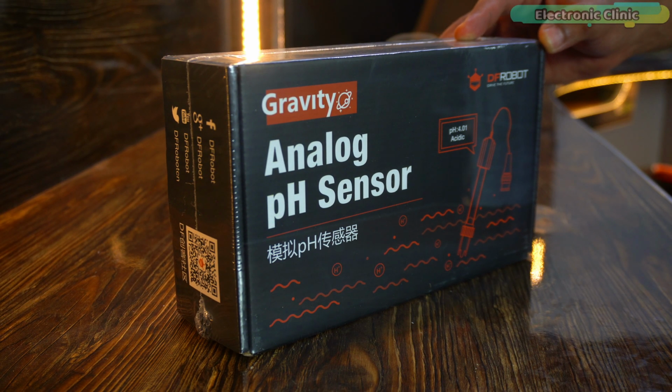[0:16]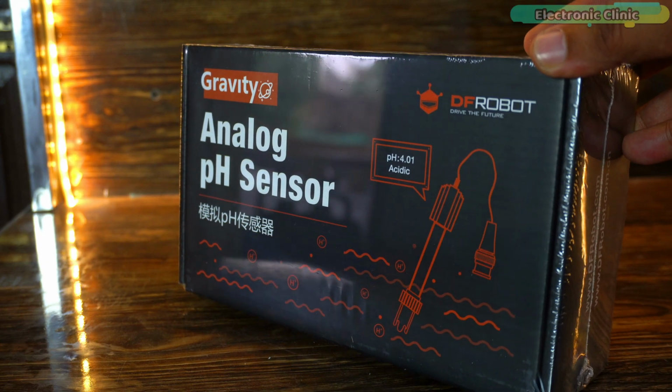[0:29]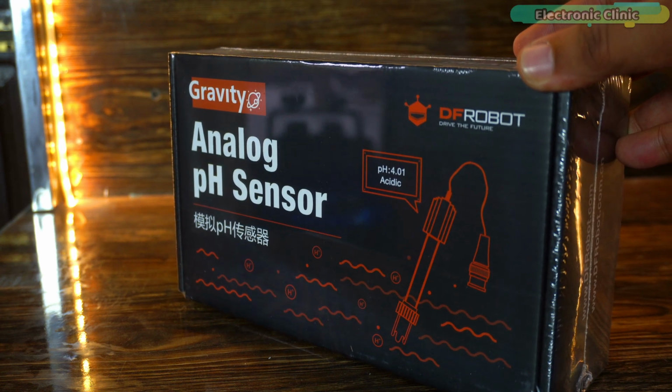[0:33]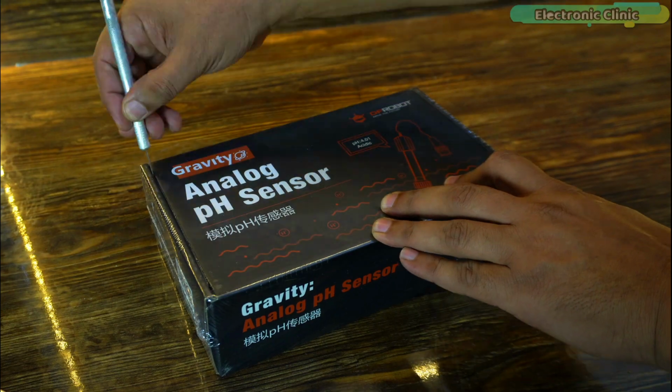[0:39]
Recently, I got the Gravity Analog pH Sensor Kit V2 from DFRobot, and let me tell you, this is the upgraded version of the pH meter V1 that we could only use with 5-volt compatible controller boards like Arduino, Raspberry Pi, and other 5-volt compatible controller boards. Whereas the pH meter V2 is compatible with both 5-volt and 3.3-volt compatible controller boards like ESP32, Raspberry Pi Pico, STM32, ESP8266, etc.
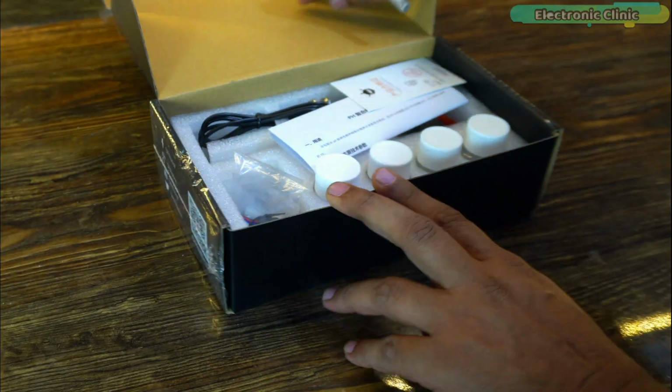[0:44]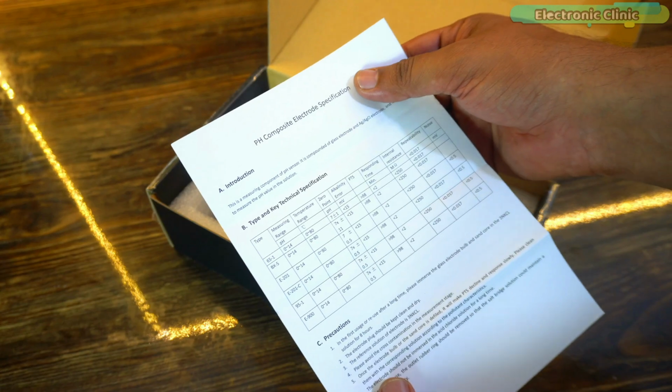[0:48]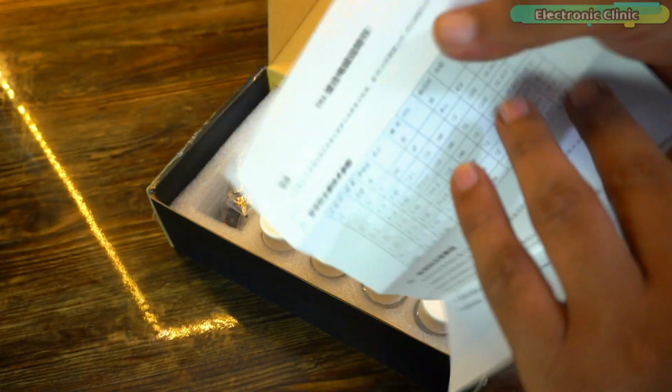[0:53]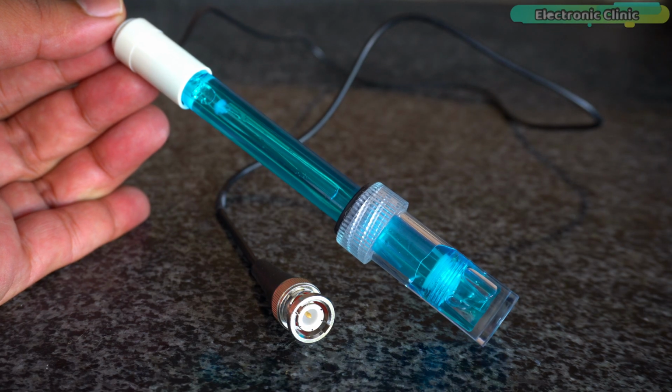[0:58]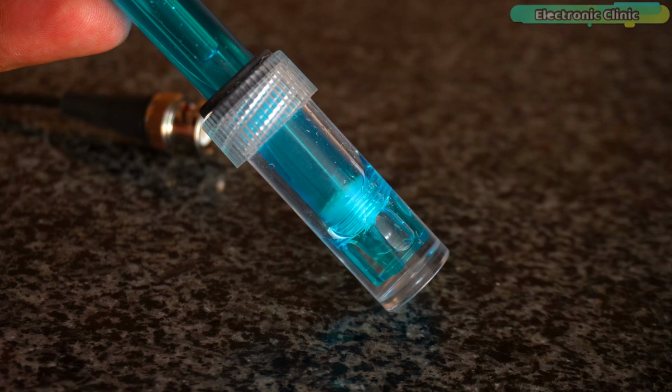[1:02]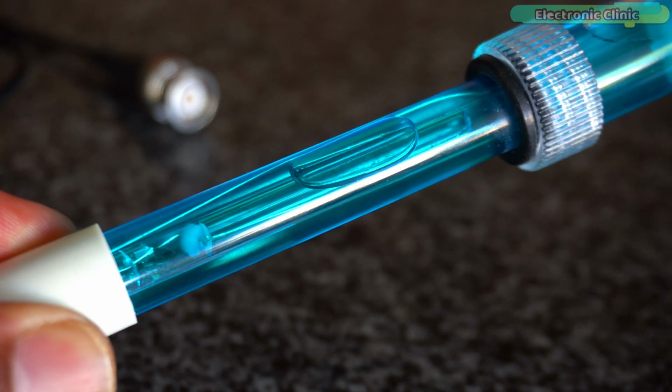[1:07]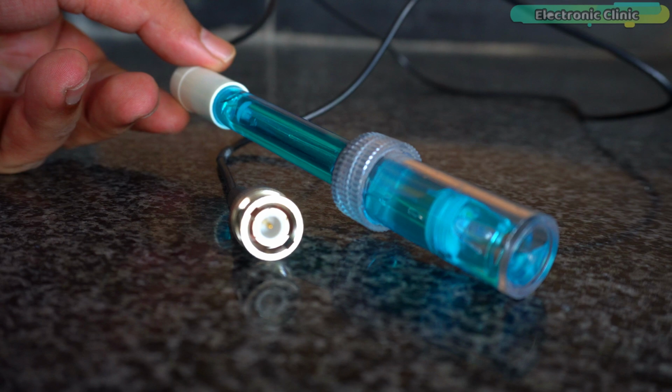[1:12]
Inside this box, you get a product qualification card, a paper that gives you an introduction, technical details and safety tips about the pH sensor, and a pH probe with a BNC connector. Detection range is 0 to 14. Temperature range is 5 to 60 degrees Celsius. Response time is less than 2 minutes. Internal resistance is less than 250 megaohms. Probe life is greater than 0.5 years depending on the frequency of use, and cable length is 100 centimeters.
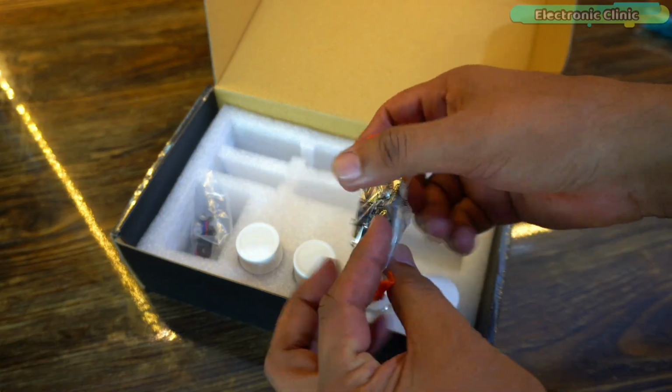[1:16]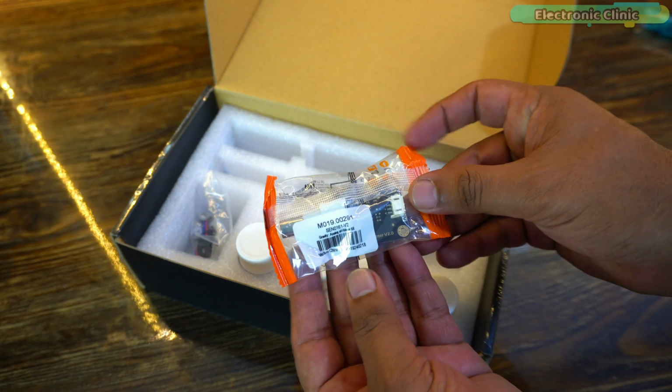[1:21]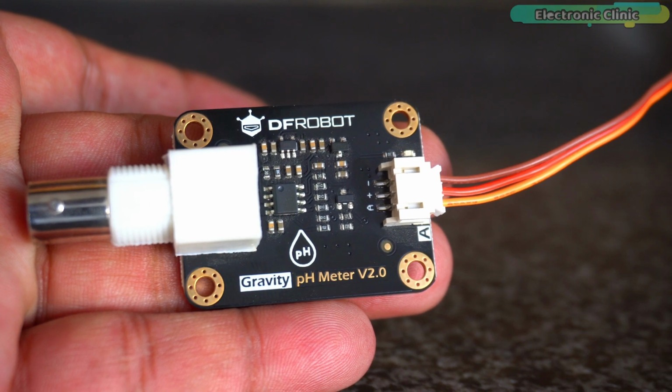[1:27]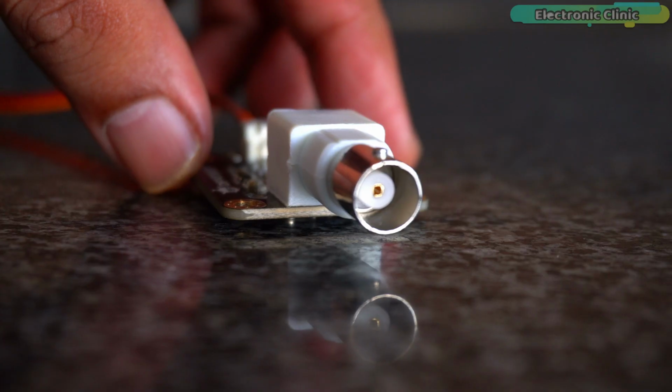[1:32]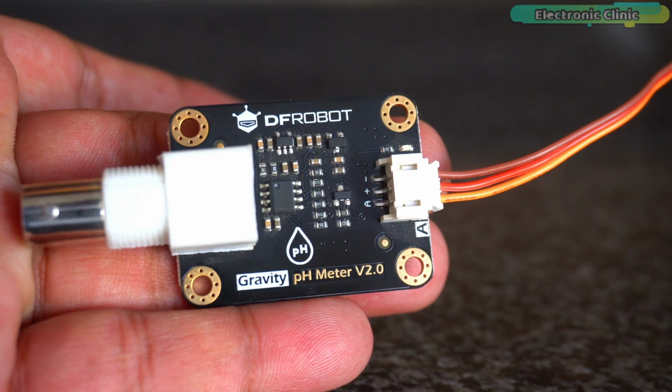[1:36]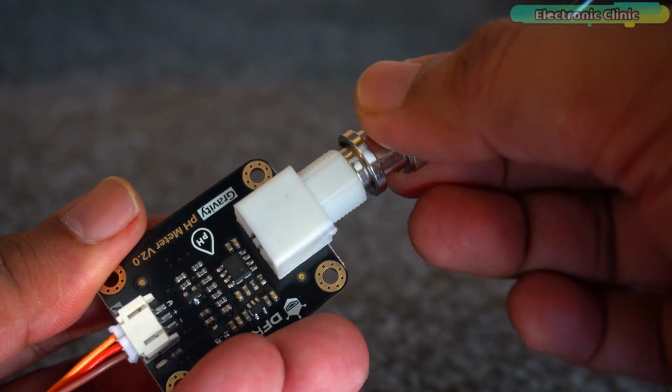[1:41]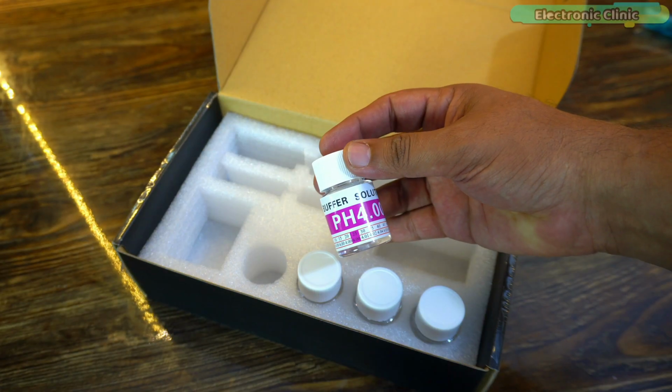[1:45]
This is the pH sensor interface board, or the signal conversion board. It must be kept dry and clean, otherwise it will affect the input impedance, resulting in an inaccurate measurement. Supply voltage is 3.3 to 5.5 volts. Output voltage is 0 to 3 volts. Probe connector is BNC. Signal connector is PH2.0-3P. Measurement accuracy is plus minus 0.1 at 25 degrees Celsius. Some wires and screws, and standard buffer solutions 4.0 and 7.0.
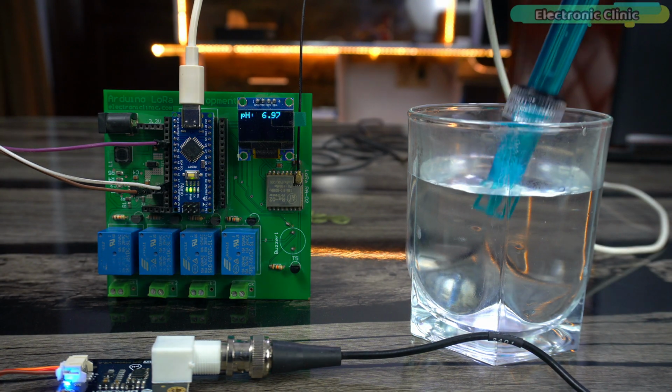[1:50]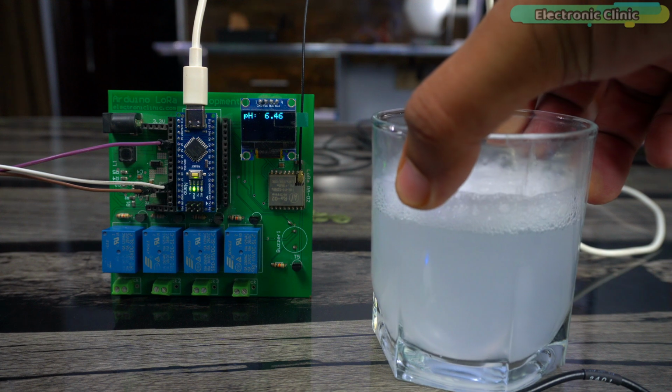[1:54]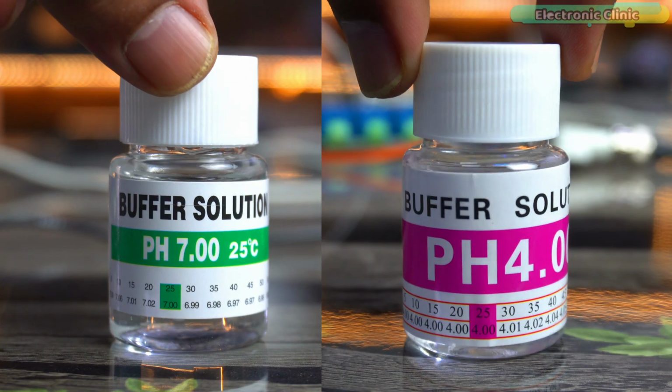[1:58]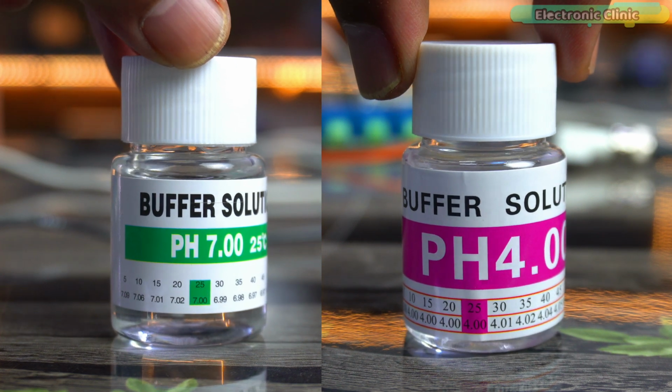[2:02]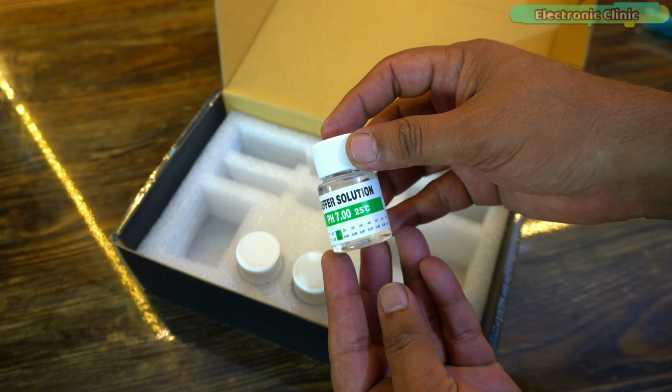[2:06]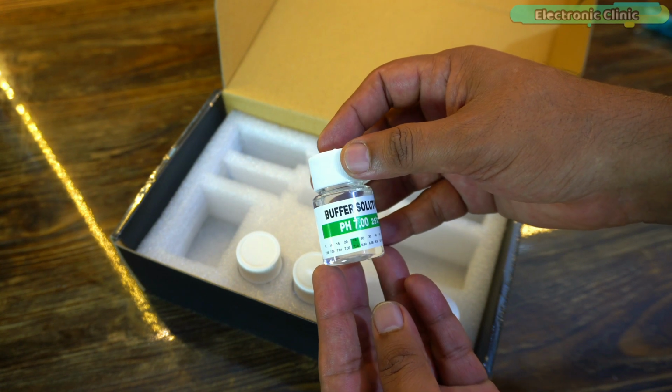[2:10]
You can only measure the pH value of water or any other liquid accurately if your pH probe is correctly calibrated. This is only possible when you use buffer solutions to calibrate the pH probe. Without these buffer solutions, you can never properly calibrate the pH probe. So that's why I ordered this complete kit. But you can also purchase buffer solutions without purchasing the entire kit.
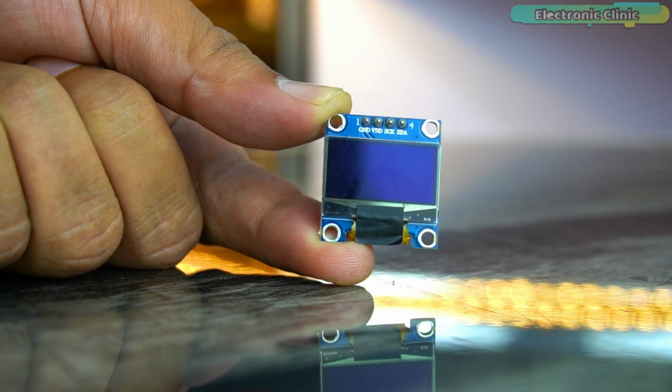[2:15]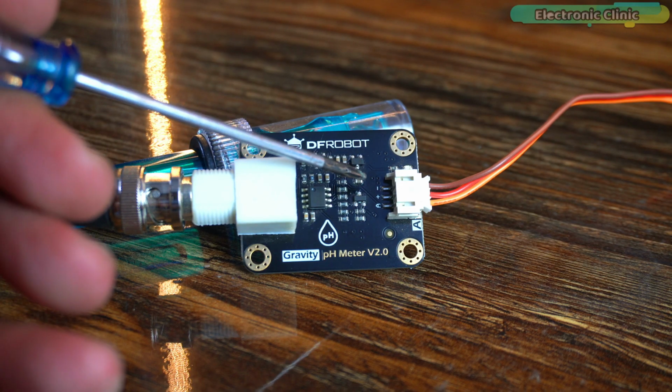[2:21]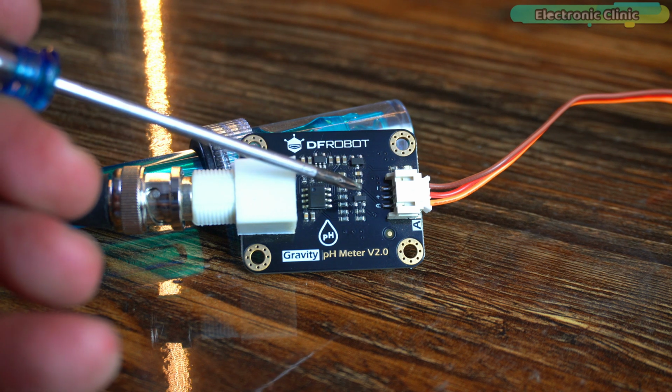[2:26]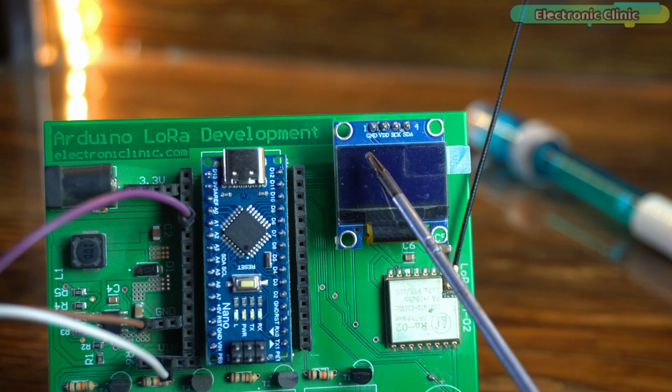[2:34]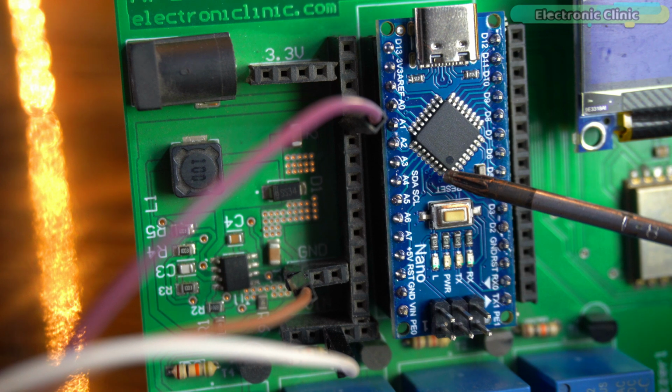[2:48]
Anyway, you will also need an Arduino board and an I2C supported SSD1306 OLED display module. Connect the red and brown wires, which are labeled as plus and minus on the interface board, to the Arduino 5-volt and ground. Connect the yellow wire, which is labeled as A on the signal conversion or interface board, to the Arduino analog pin A1. Connect the VCC and ground pins of the SSD1306 OLED display module to the Arduino 3.3 volt and ground pins. Connect the SDA and SCL pins to the Arduino I2C pins A4 and A5. A4 is the SDA and A5 is the SCL. You can follow this circuit diagram.
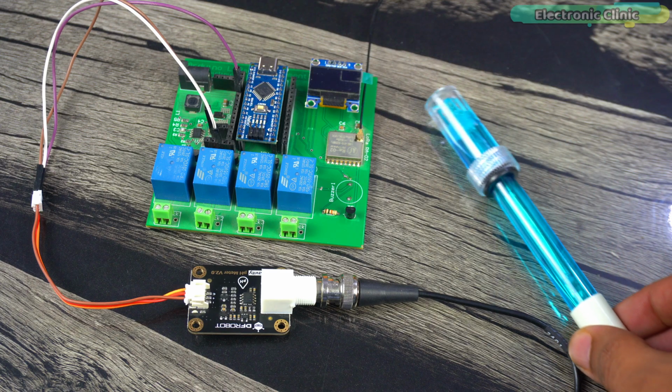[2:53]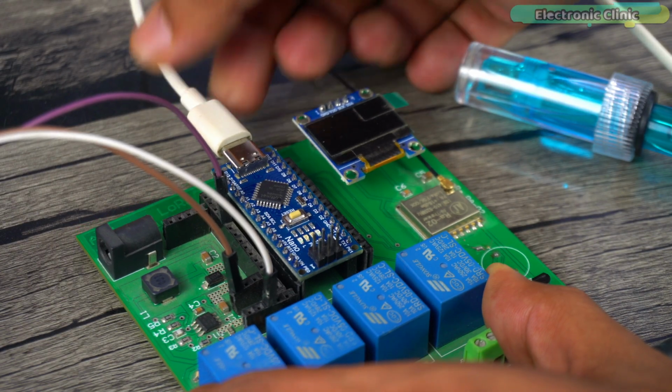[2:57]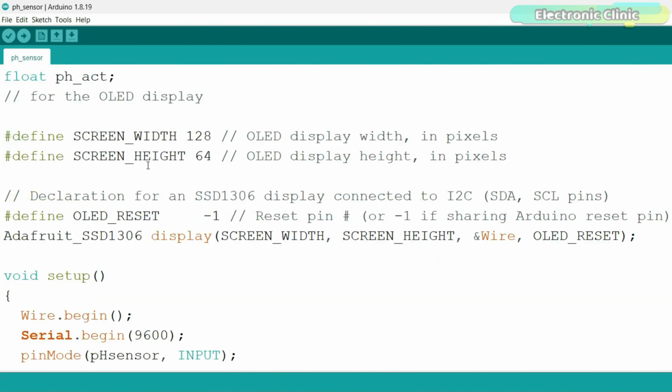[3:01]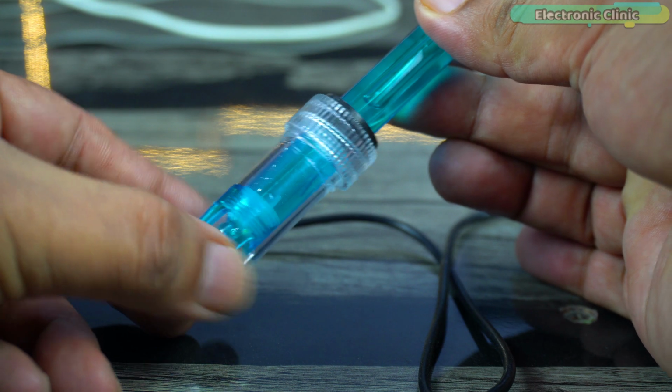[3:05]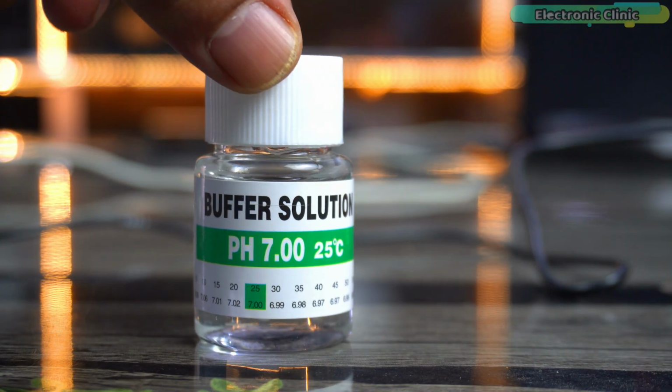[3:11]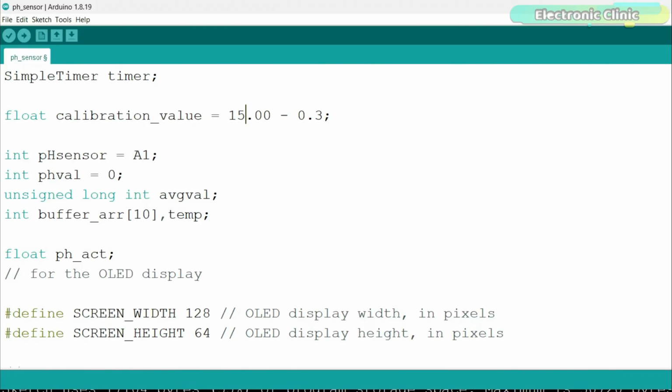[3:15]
Our hardware setup is completed, so let's calibrate the pH sensor. For this, first connect the Arduino to your laptop or PC. Then upload this program. You can download it from our website, electronicclinic.com. Dip the pH probe in the pH 7 buffer solution. Open the serial monitor and wait for at least 2 to 5 minutes until the pH value gets stable.
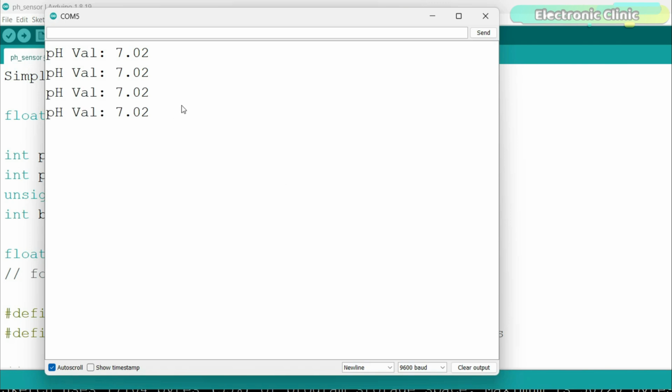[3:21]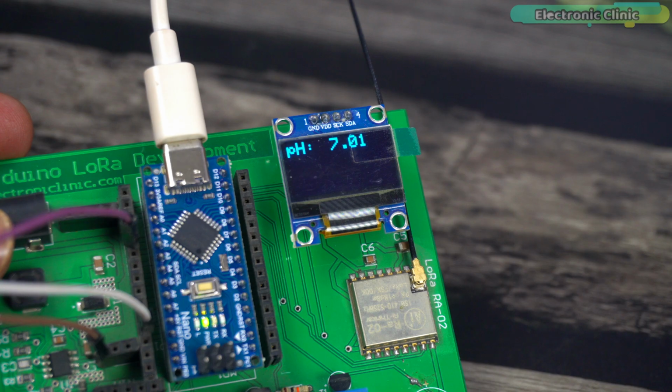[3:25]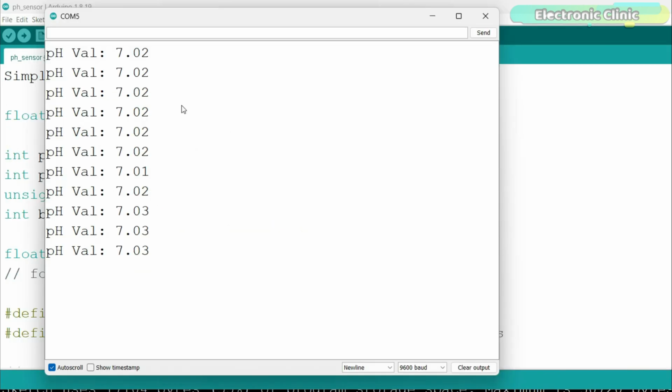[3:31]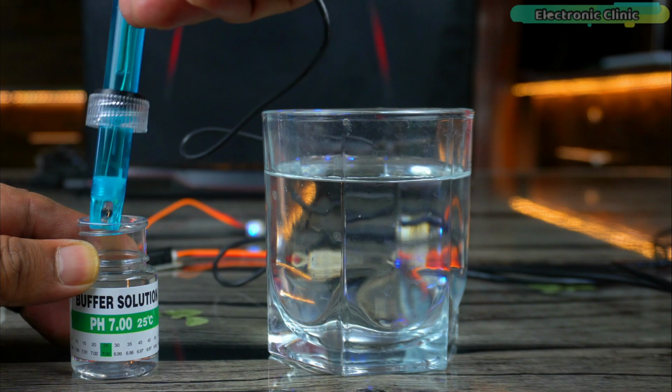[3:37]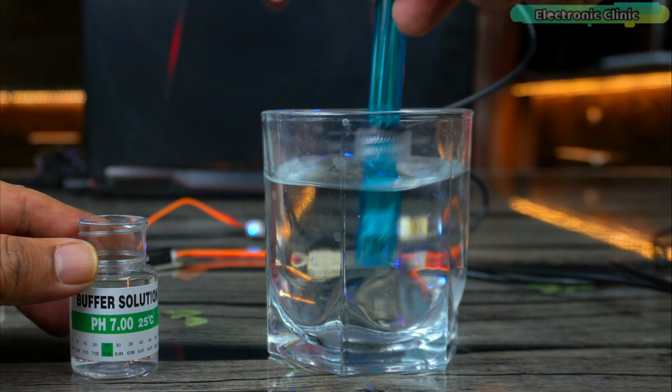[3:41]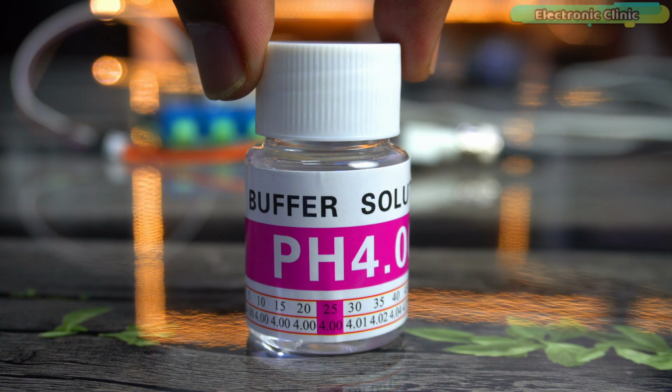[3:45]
Right now you can see the pH probe has successfully detected the pH 7 solution. This is because I have already calibrated it. If you get a wrong value, simply adjust the calibration value in the program until the pH probe reading matches the buffer solution. This process should take around 5 minutes. When you use buffer solutions, you need to clean the probe with water each time. Make sure there isn't any pH 7 solution on the probe when you dip it into the pH 4 solution
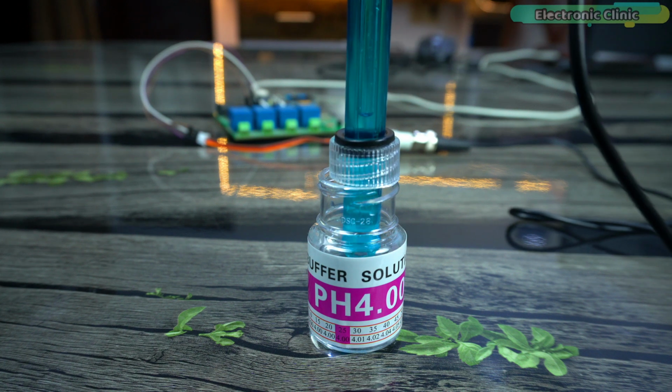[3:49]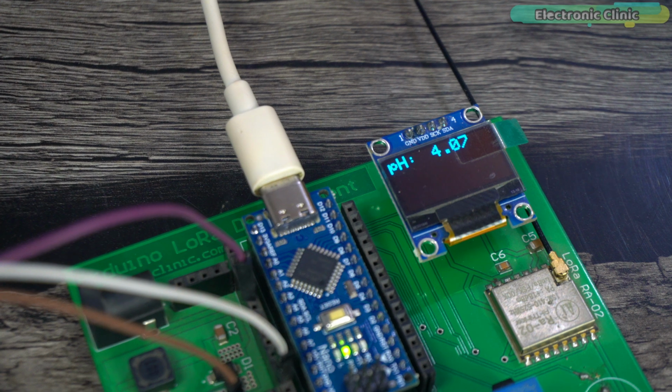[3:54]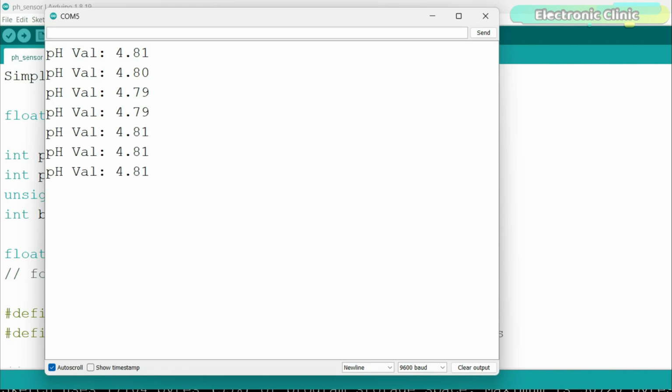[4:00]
and vice versa. Anyway, after this, when you dip the pH probe into the pH 4 solution, it will automatically detect it. You can see it's getting close to the pH 4 value, which means we have successfully calibrated the pH probe. As per the manufacturer, the pH sensor response time is around 2 minutes, so don't panic if you see wrong values at first. Give the pH sensor some time to stabilize.
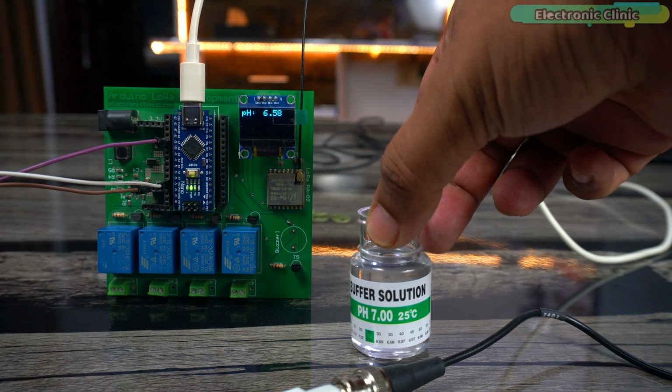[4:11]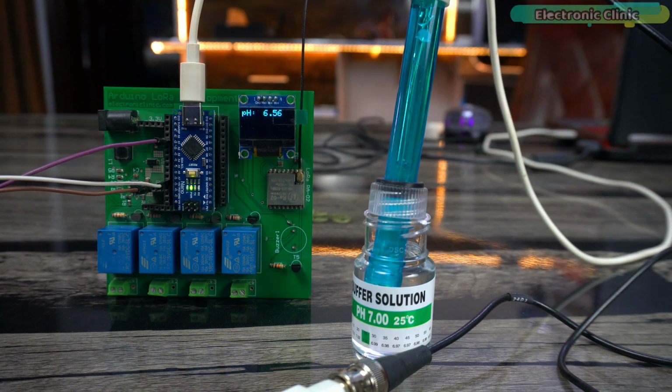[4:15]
Let's dip it again in the pH 7 solution and let's see if it can still successfully detect the pH 7 buffer solution. Amazing! It successfully detected the pH 7 buffer solution. Now let's go ahead and check the pH values of different liquids.